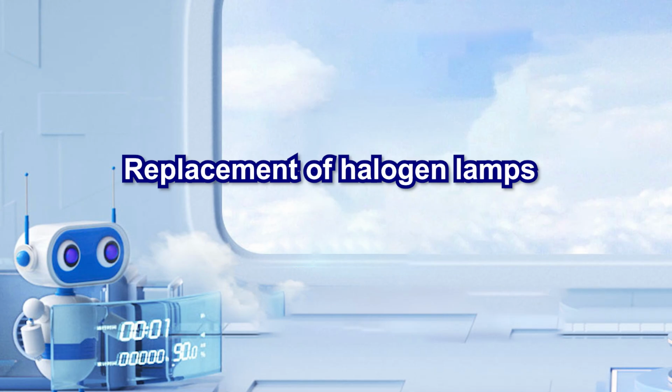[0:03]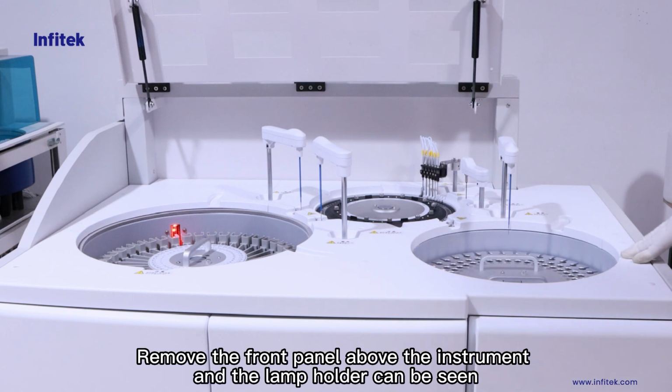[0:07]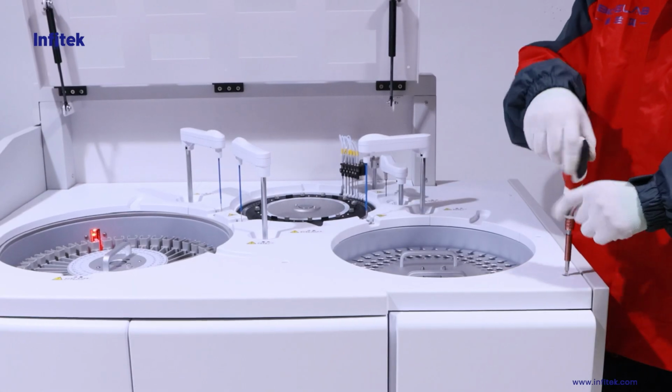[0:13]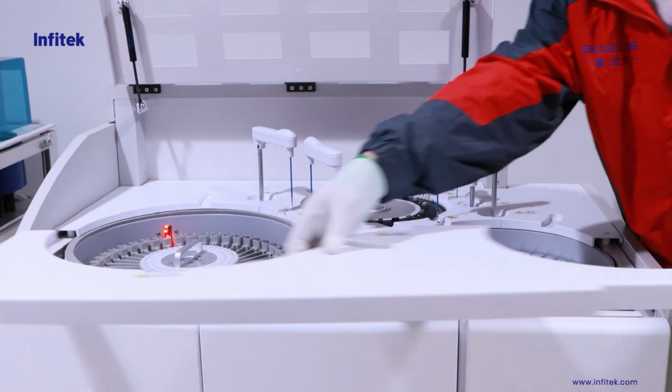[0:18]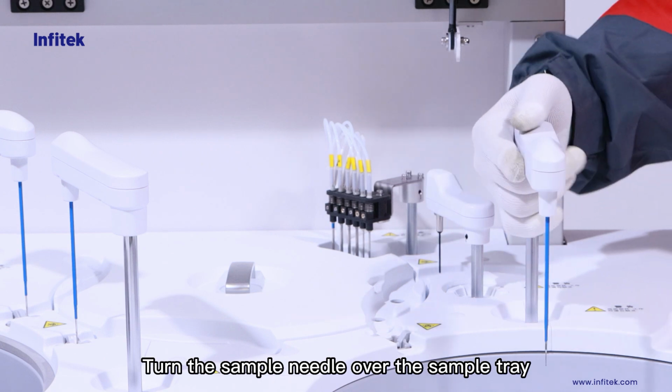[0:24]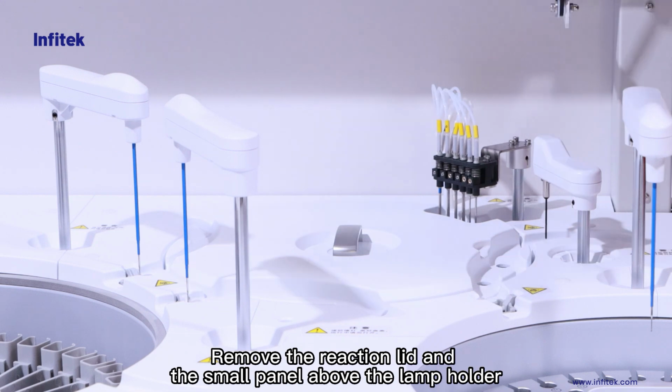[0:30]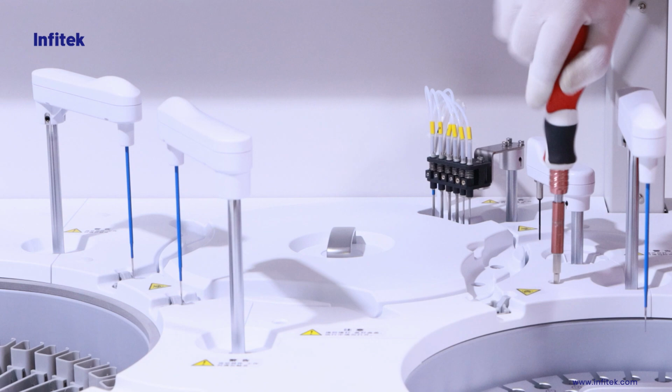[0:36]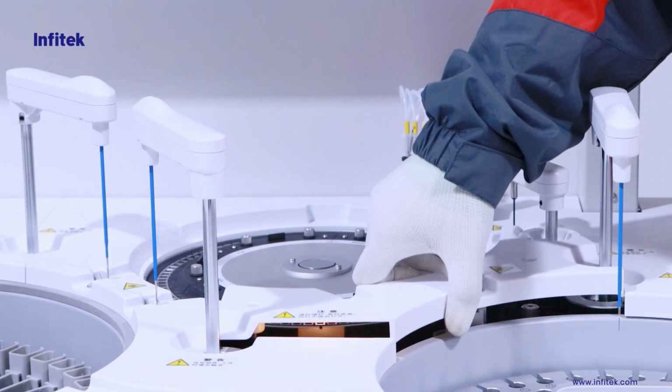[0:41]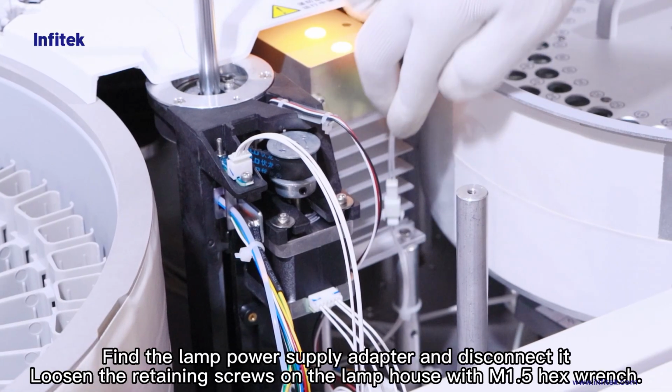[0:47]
Remove the front panel above the instrument, and the lamp holder can be seen. Turn the sample needle over the sample tray. Remove the reaction lid and the small panel above the lamp holder. Find the lamp power supply adapter and disconnect it.
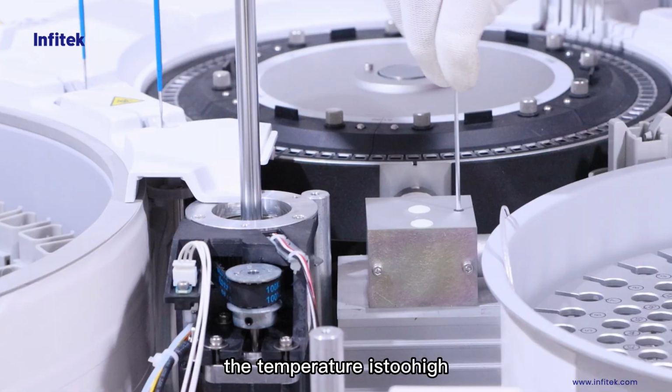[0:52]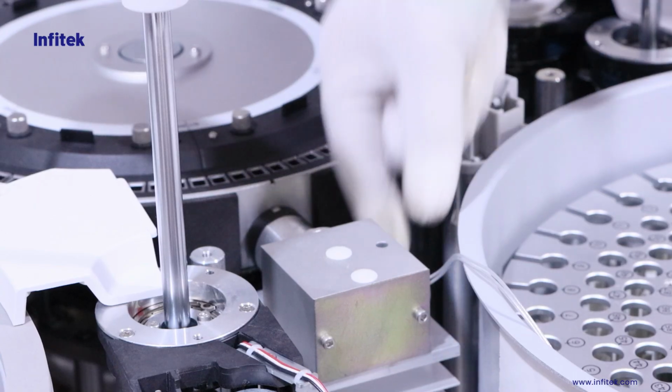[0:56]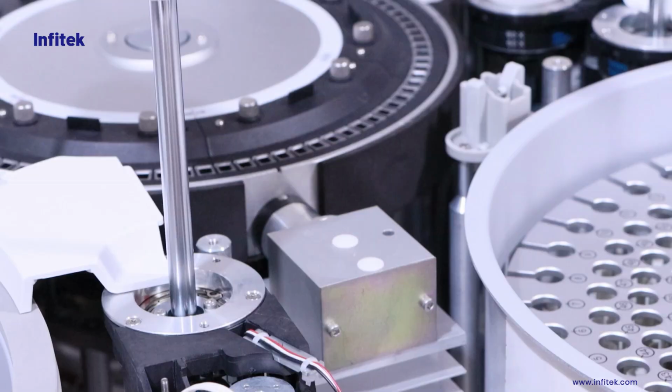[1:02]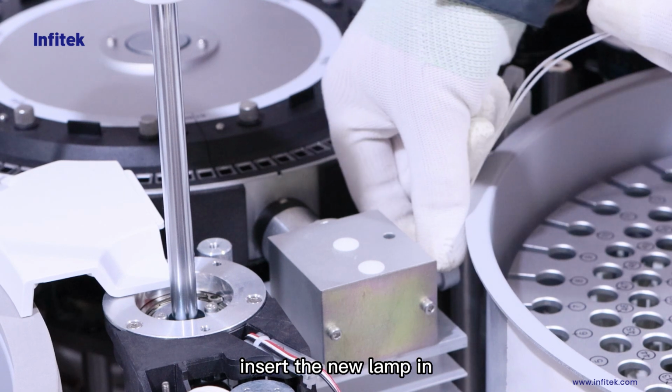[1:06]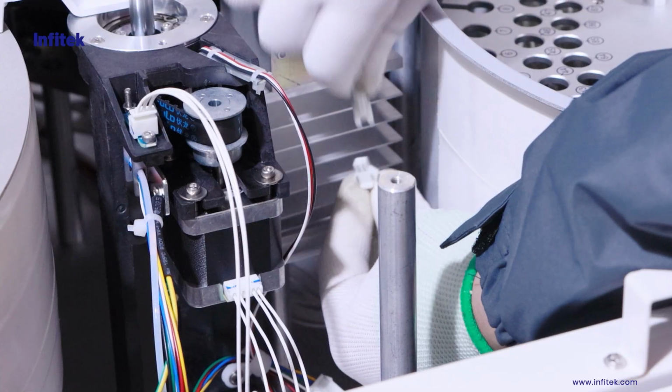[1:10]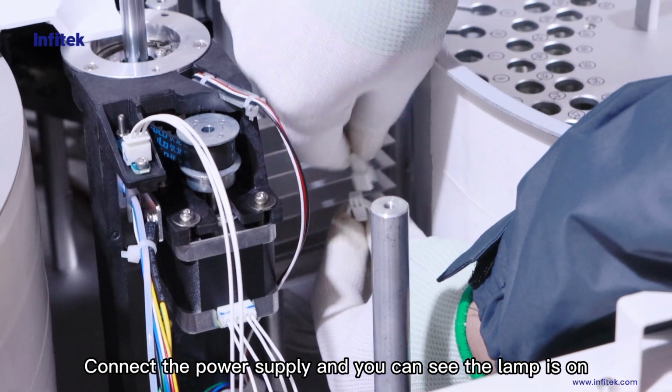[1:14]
Loosen the retaining screws on the lamp house with an M1.5 hex wrench. Having turned off the light for 10 minutes, remove the lamp. Insert the new lamp in. Connect the power supply and you can see the lamp is on.
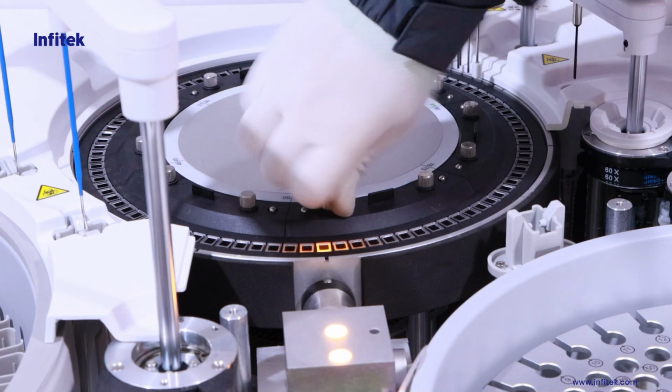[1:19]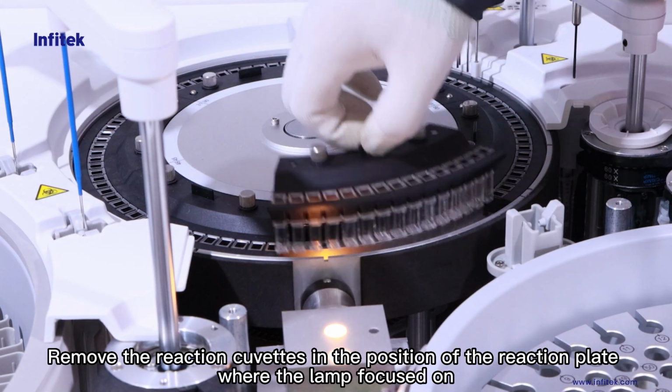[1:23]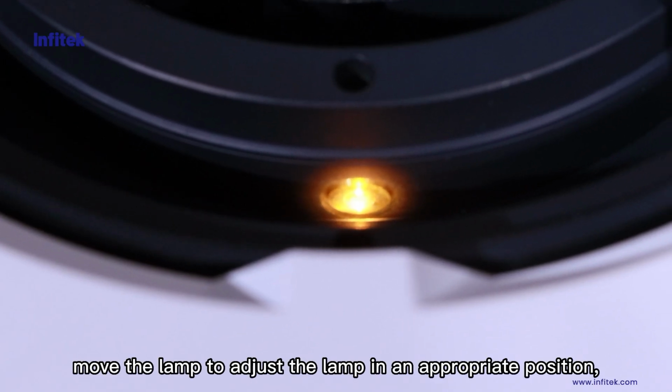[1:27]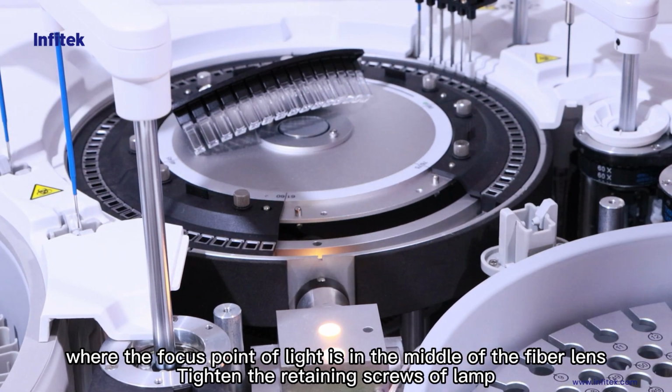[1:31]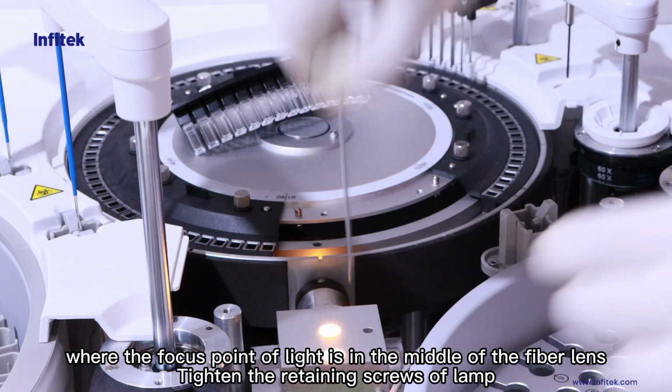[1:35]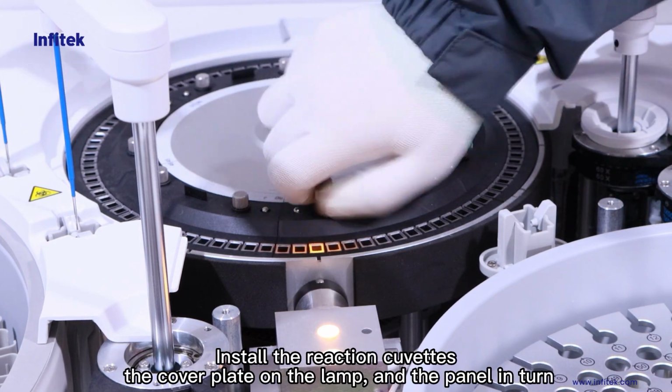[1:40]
Remove the reaction cuvettes in the position of the reaction plate where the lamp focused on. Move the lamp to adjust it to an appropriate position, where the focus point of light is in the middle of the fiber lens. Tighten the retaining screws of the lamp. Install the reaction cuvettes, the cover plate on the lamp, and the panel in turn.
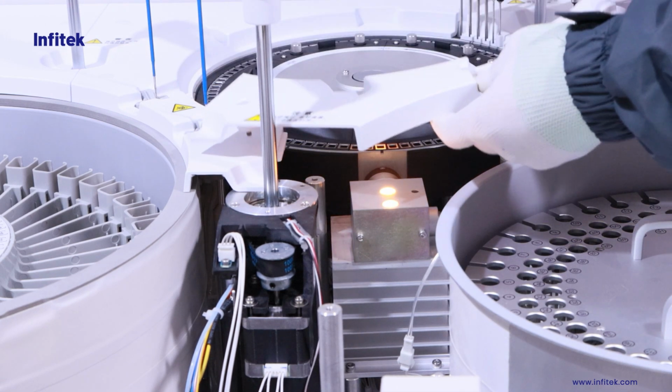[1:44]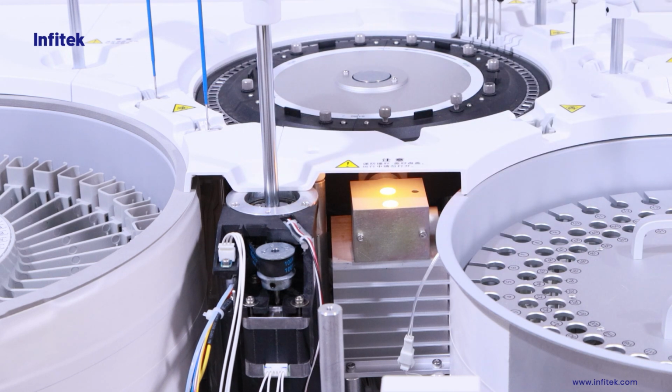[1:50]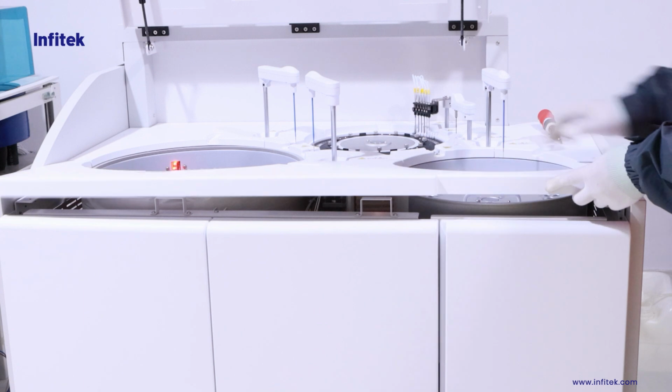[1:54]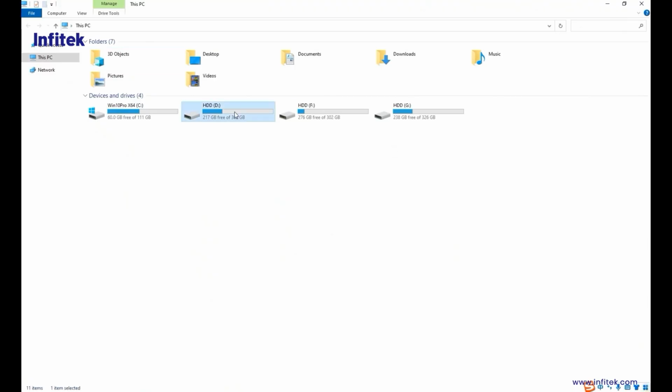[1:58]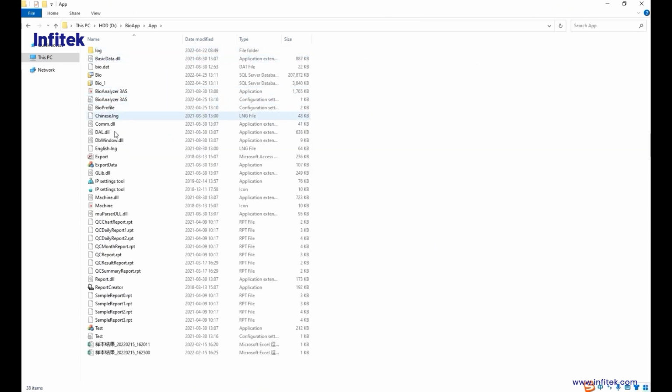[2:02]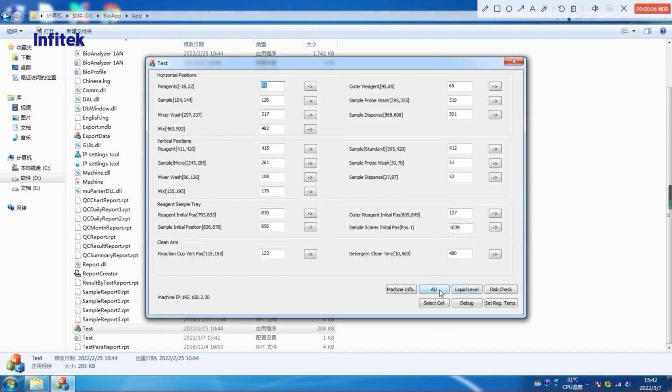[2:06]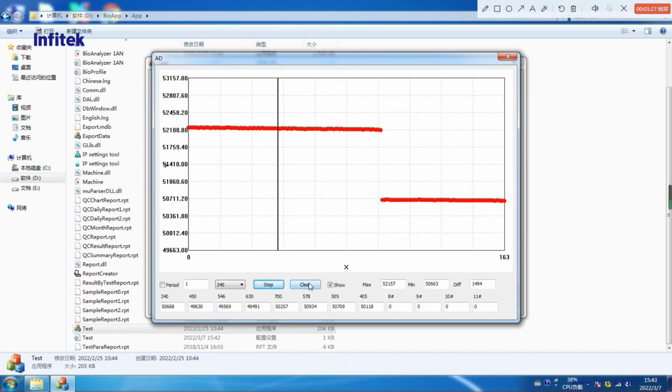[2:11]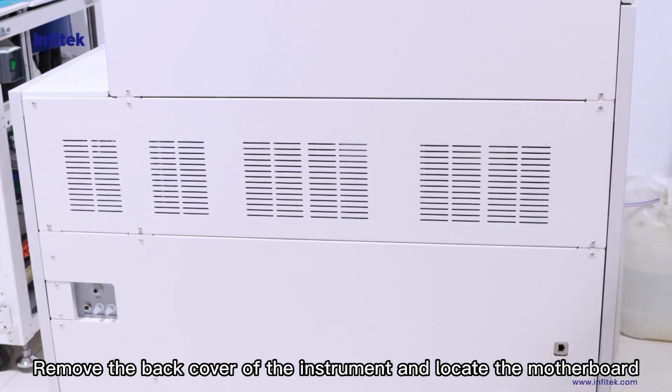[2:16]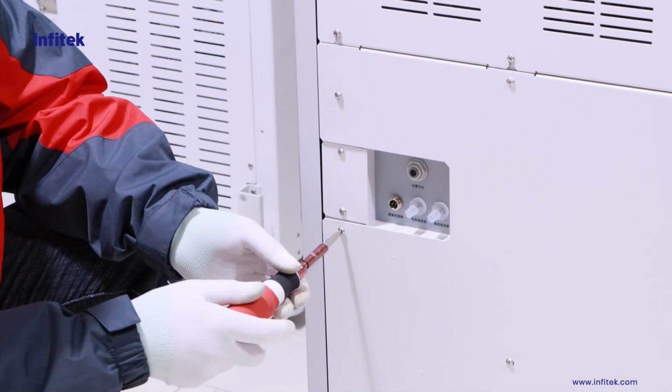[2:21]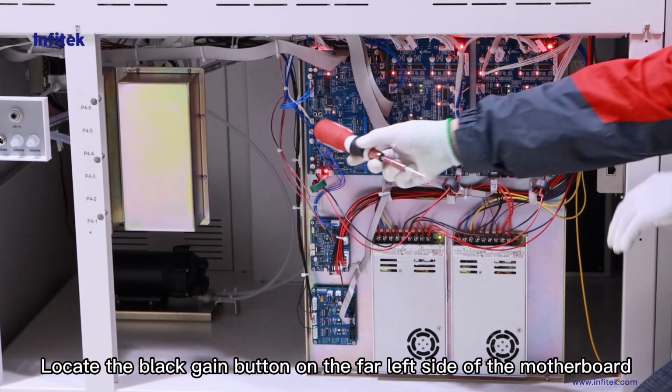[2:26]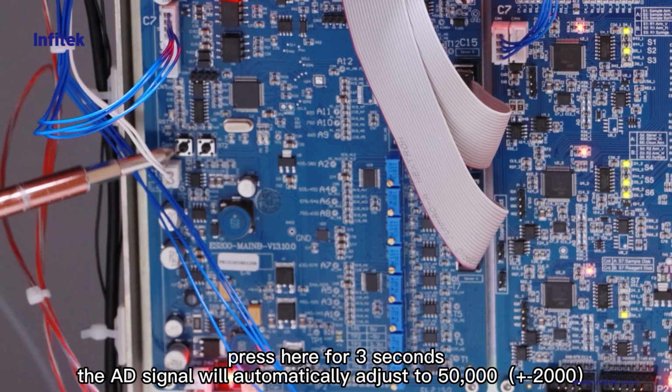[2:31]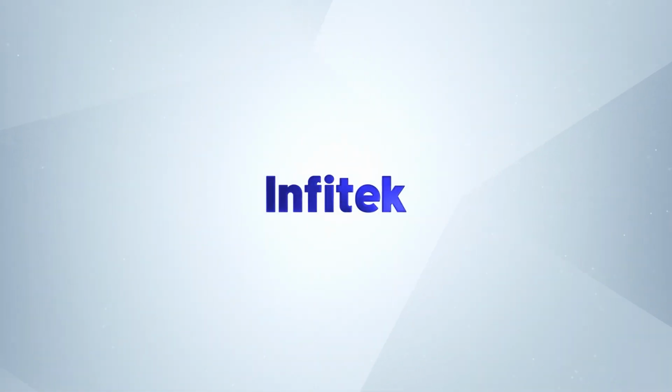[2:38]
Open test to enter AD signal and click start. Remove the back cover of the instrument and locate the motherboard. Locate the black gain button on the far left side of the motherboard. Press here for 3 seconds. The AD signal will automatically adjust to 50,000.